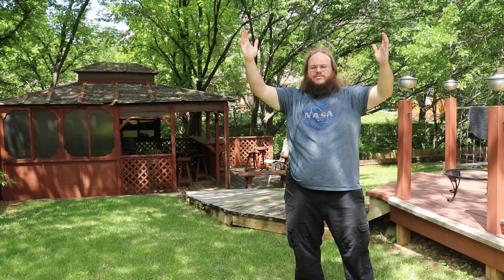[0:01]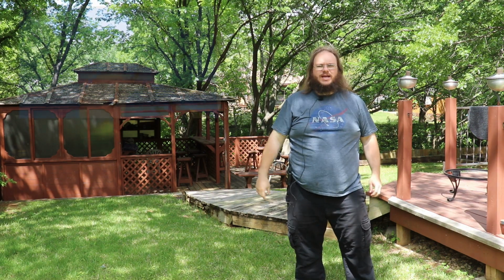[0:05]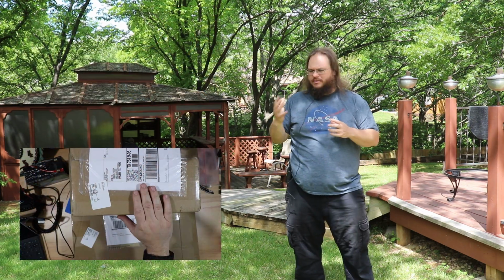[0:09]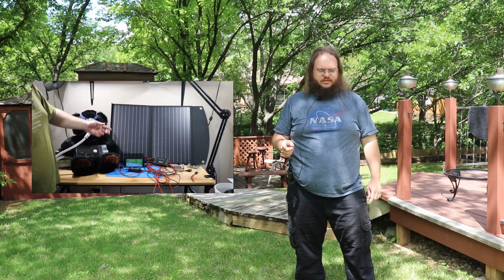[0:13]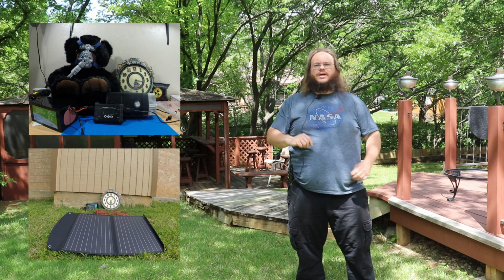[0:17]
KG5AHJ, and today I'm building and unboxing and putting together my solar charge battery system for the CPAP machine. Yes, I said that right. Along with testing and seeing how it performs. So, play that awesome intro video!
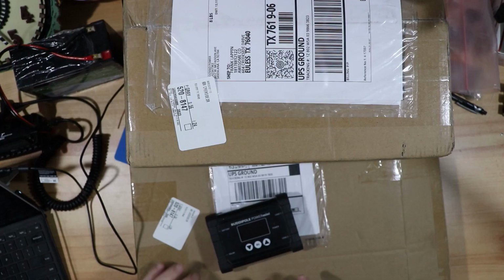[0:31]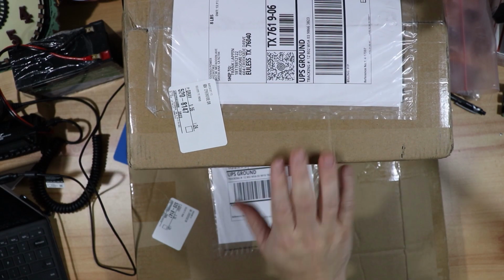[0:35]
Here I am back at the workbench and I got some new toys in here. Yay! I have a Bioenno battery and a solar panel. Let's go ahead and get them unpacked.
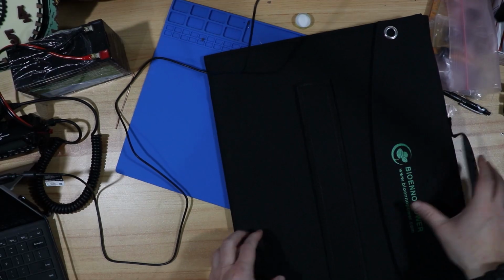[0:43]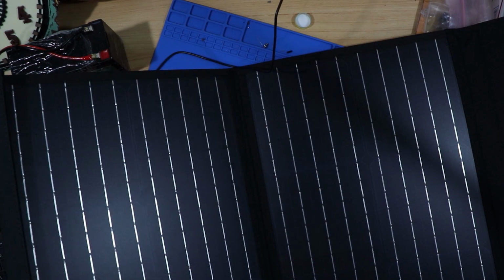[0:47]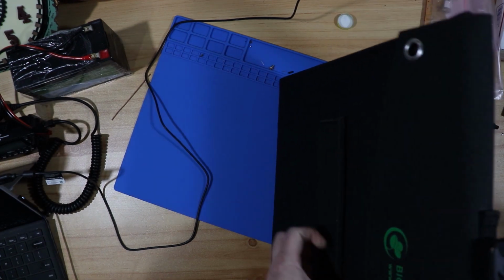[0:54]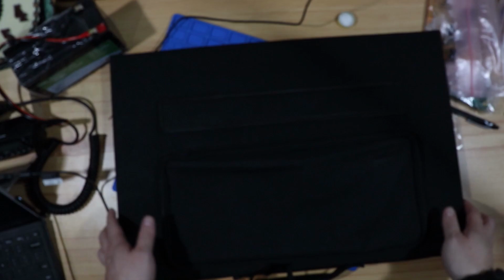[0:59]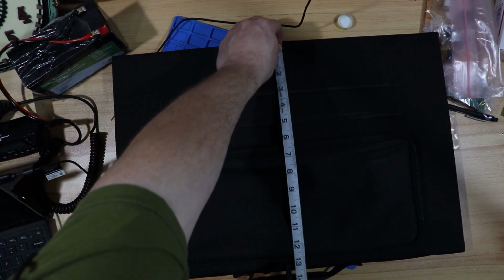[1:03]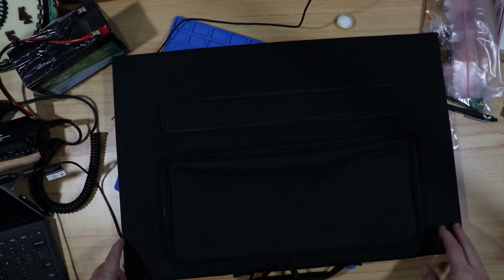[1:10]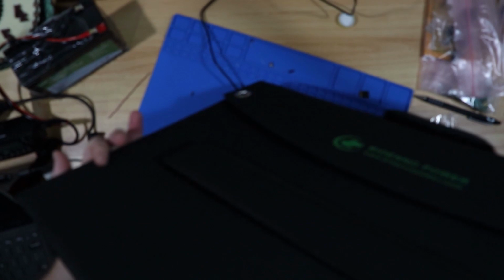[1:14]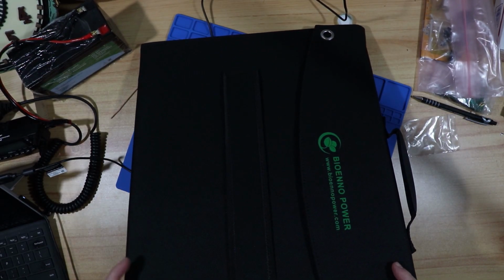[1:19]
So this is the 60 watt solar panel. Weighs about 5 pounds and it's foldable. And I was hoping it would be a little bit smaller. It comes in about 21 inches across by 14 inches long, just shy of 2 feet this way and a foot this way. I was hoping to take it backpacking. We'll see if I can find a backpack for it. It is 5 pounds, which is not too bad. I just wish it was a little bit more compact. I can't wait to get this out and see what it does.
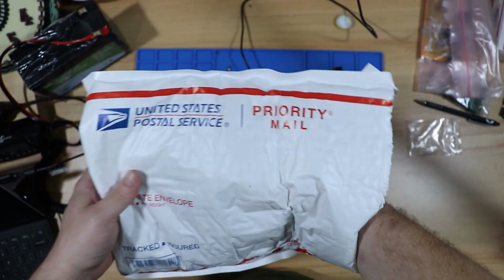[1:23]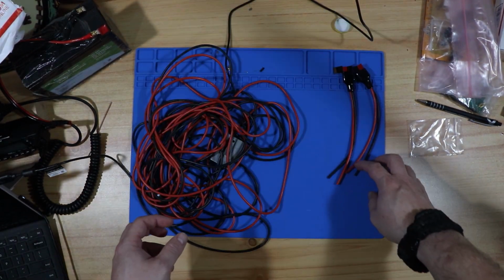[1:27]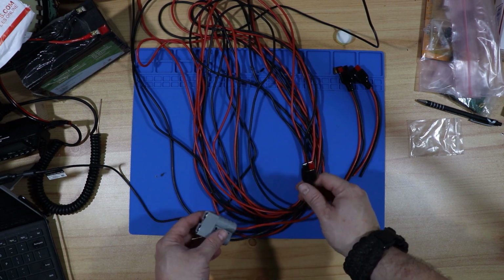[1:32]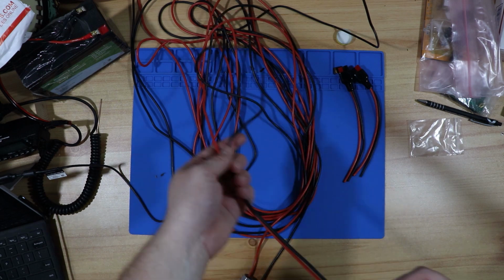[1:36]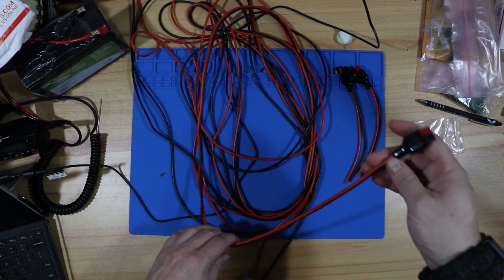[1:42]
We'll take this out next. This should be just some extension cords. Oh wow, extra cables? I love how flexible these cables are compared to other power cables. It's just a little bit unwieldy being loose like this with two cables. I added zip ties around it about every foot or so, and this is becoming one of my favorite cables.
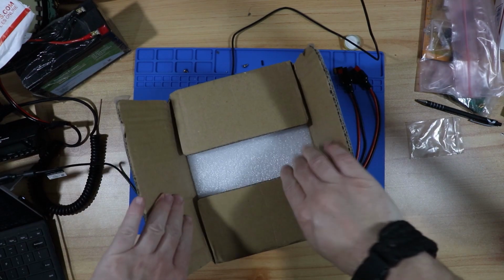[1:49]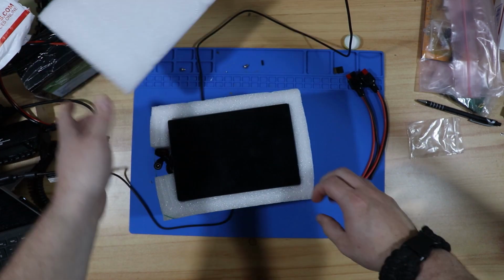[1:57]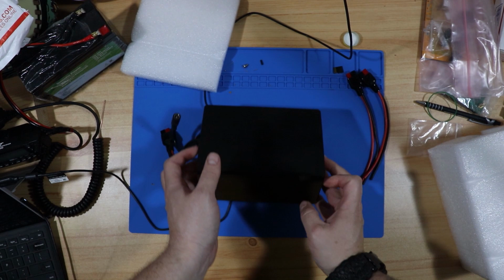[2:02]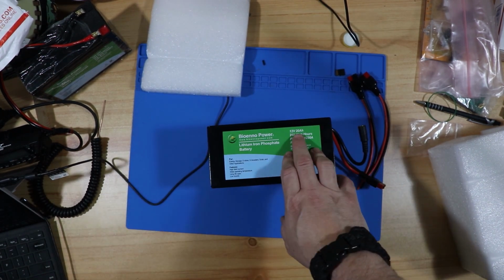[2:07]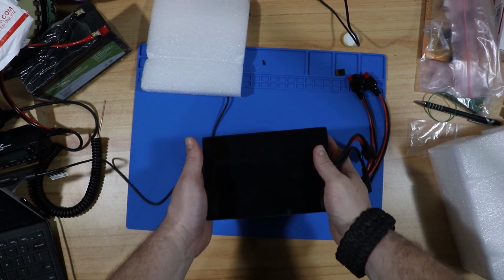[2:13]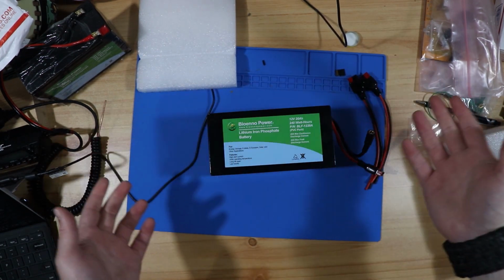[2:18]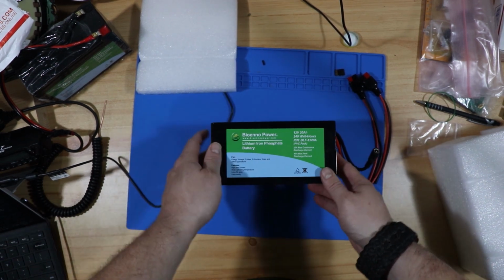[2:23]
All right, and the next and final thing. Da-da-da-da! The battery! Ooh, that was packed nicely. Heavy guy. This is a 20 amp hour 12 volt battery from Bioenno, and it's only about 5 pounds, and it's very nicely compact. A little heavy, but it's 20 amps. It's gonna be heavy. There's a lot of cells in there. Look at, man, this is nice. I like it, I like it.
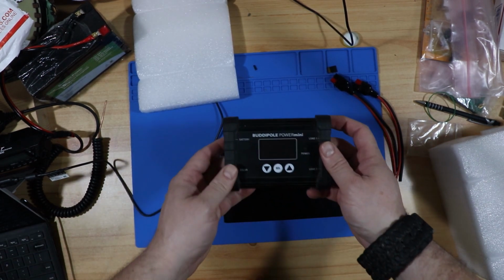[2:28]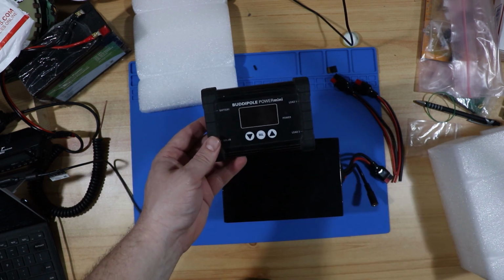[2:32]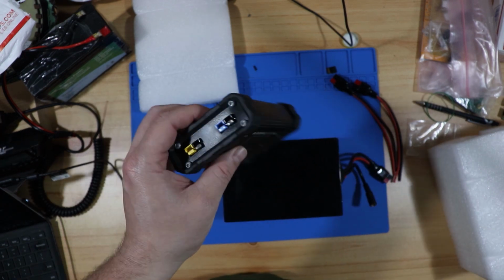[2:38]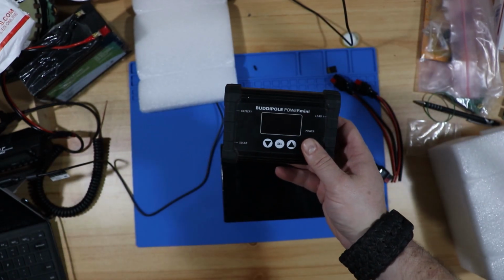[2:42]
Then the final piece to the ensemble is a Buddipole PowerMini. I got this courtesy of Jason. This is one of his older models. I played with it a little bit last night. It's very nice, compact, and I like how light it is. So this will be perfect to go backpacking with.
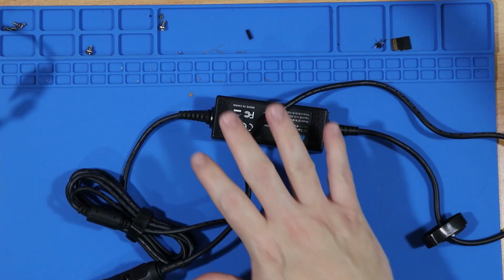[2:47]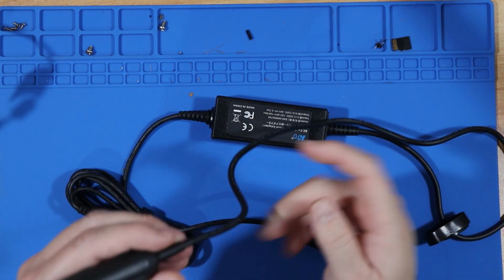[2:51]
All right, let's get some power poles on some cables. Now, since I have this 12 volt adapter for my CPAP machine, I want to cut this cord and put power poles on it. But I don't want to just get rid of this 12 volt adapter. I'm also going to put power poles on this end. So if I do need to use the old 12 volt adapter plug, I can plug it back in using the power poles and I'll still have the adapter.
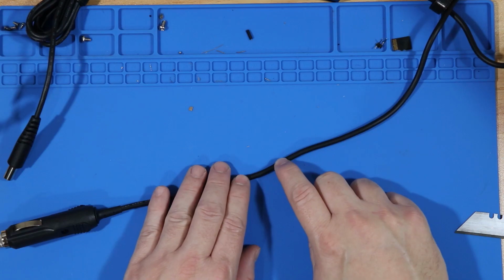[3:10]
Before I get started, I'm going to go ahead and cut into this line to see what kind of wiring we have, and also to put a voltmeter on there to see which wire is giving us the positive current. Sometimes these manufacturers use the same color of wires inside there, so this approach will show us which line is actually positive without relying on them.
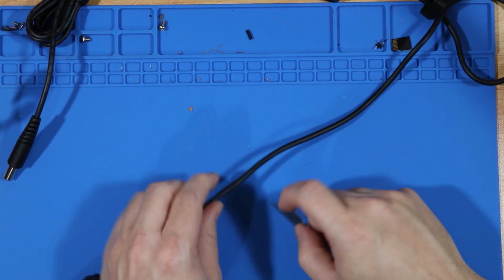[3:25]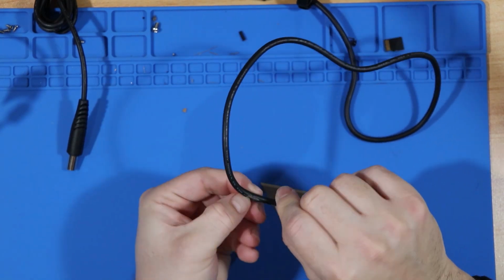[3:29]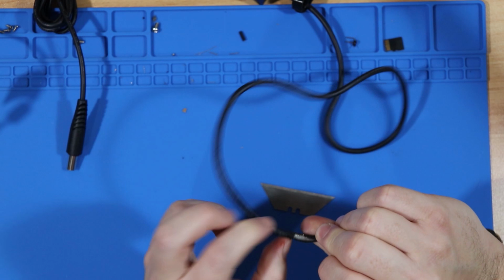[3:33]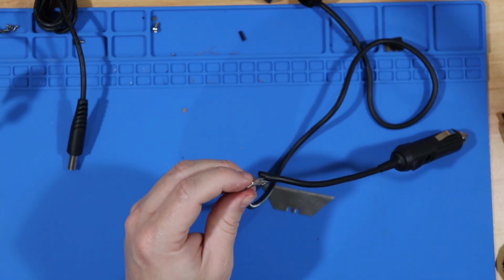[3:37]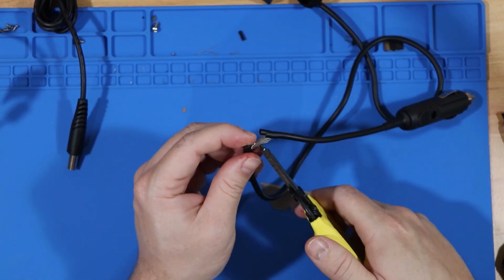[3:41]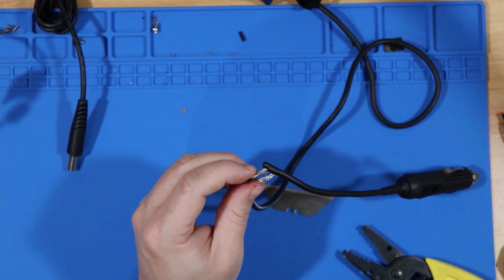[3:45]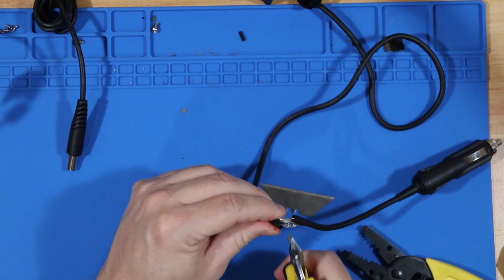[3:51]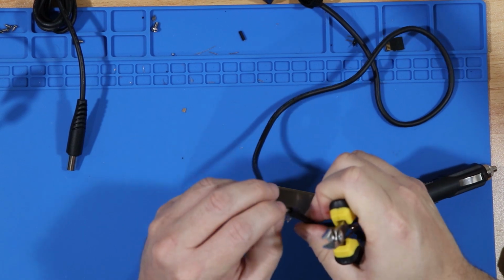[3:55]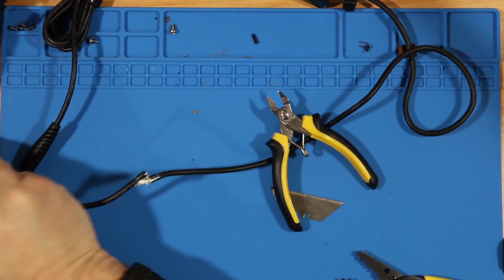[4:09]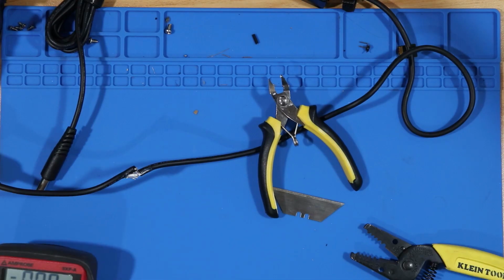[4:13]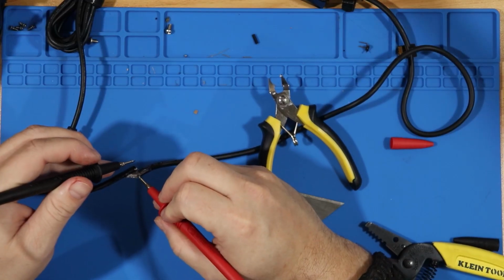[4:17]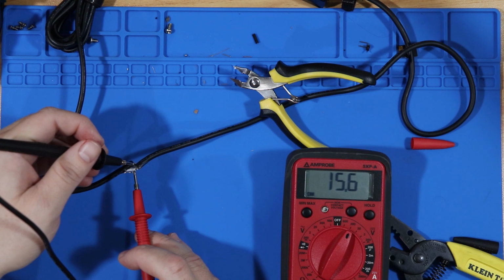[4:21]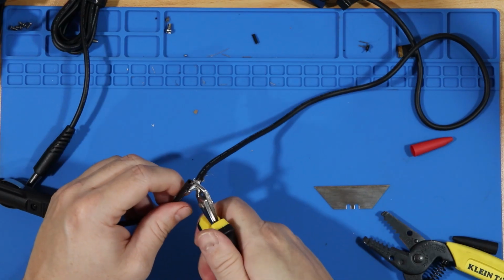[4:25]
Well, what is that? I think that's just shielding. Watch me mess this up. Now I'm just trying to expose the inner bundle of wires. Let's go ahead and plug it into a 12 volt port and see what is what. What I'm seeing here is the inside wire is our positive wire and the outside shielding is our ground. I think I can make this work. Well, no going back now.
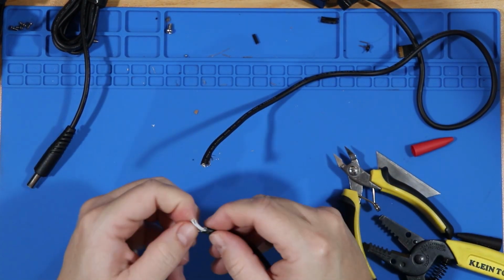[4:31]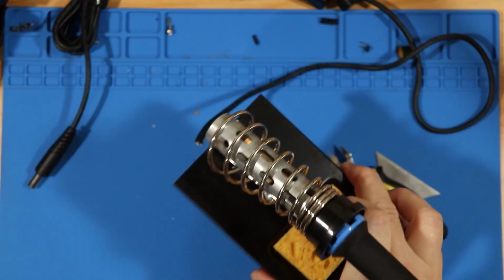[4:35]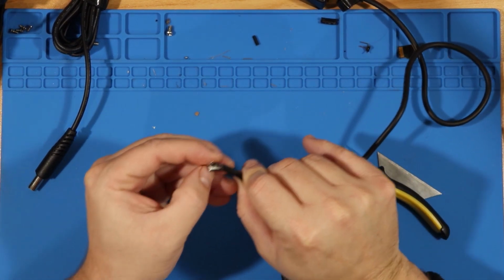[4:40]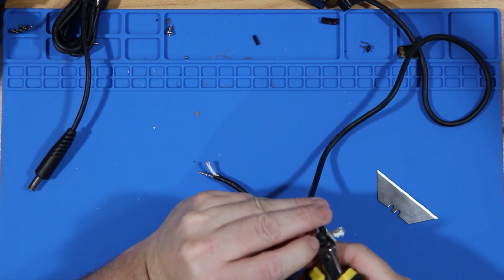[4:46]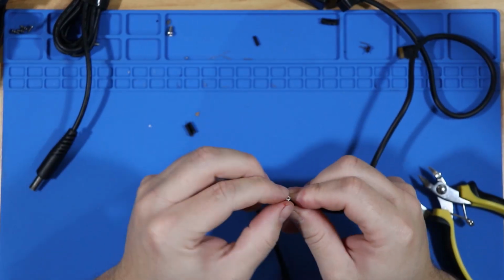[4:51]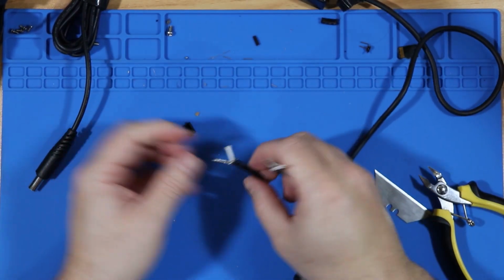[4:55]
Well, I got the soldering iron warming up here. Go ahead and prep this line, or this side also. I'm just peeling the jacket back here, cutting it off, and then taking all this ground wire, pulling it to one side, and twisting it together. And there's my ground. Same thing with this side. I'm going to leave them separate until I get the power pole connected, so they don't have a chance to touch or I accidentally pull the wrong wire over and have to sort it out.
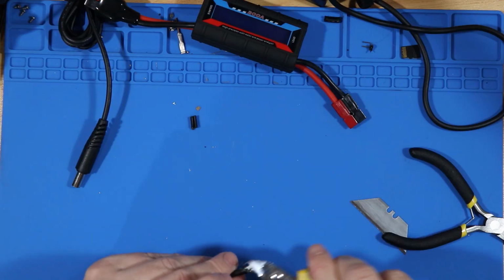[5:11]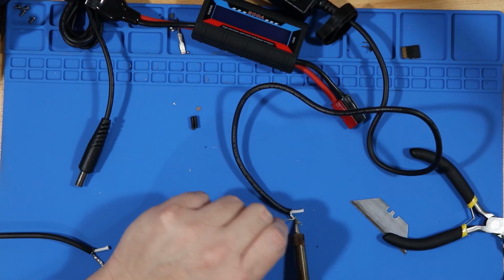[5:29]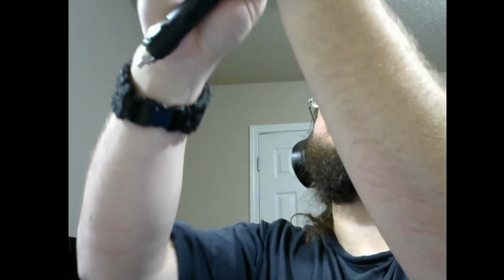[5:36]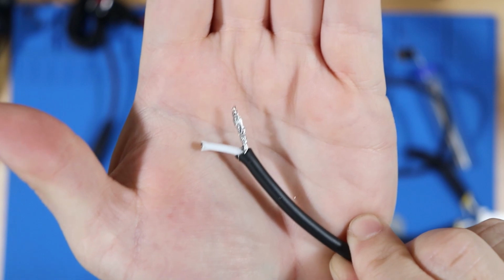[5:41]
All right, here comes the hard part. Let's kind of cut those stragglers. I'm going to tin these. Now that is one solid piece of wire, or it's going to act like a solid piece of wire.
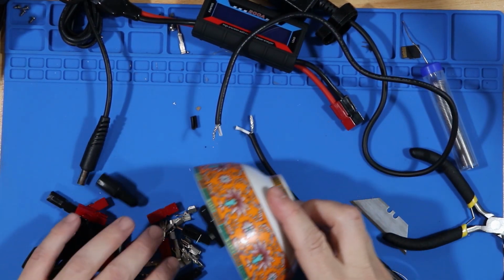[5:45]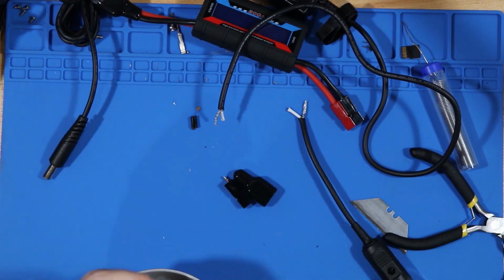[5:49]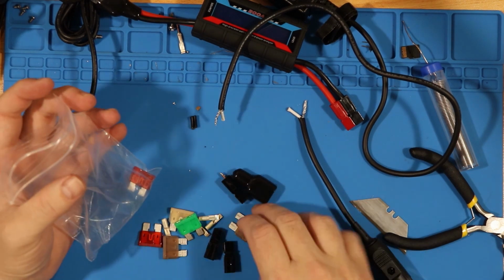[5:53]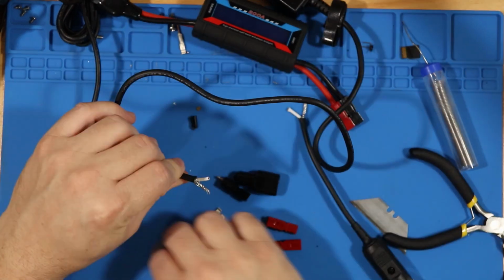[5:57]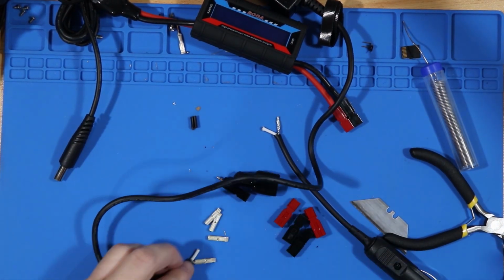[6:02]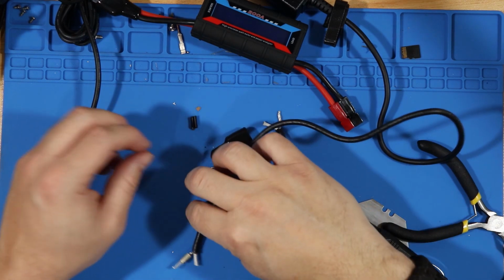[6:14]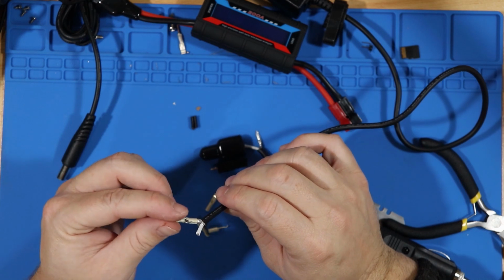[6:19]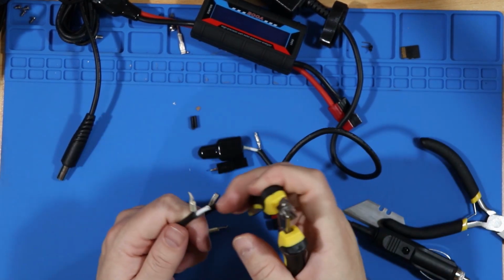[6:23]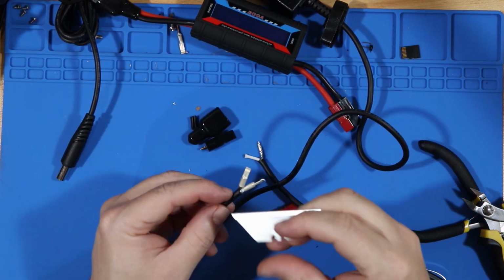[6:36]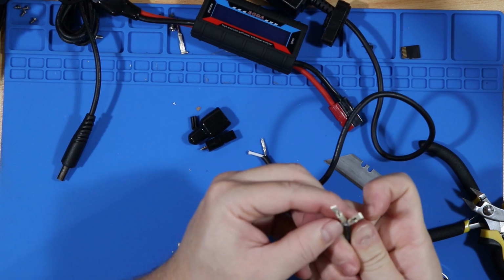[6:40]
I will call you the fuse bag. Hold it there. That was awkward. It's in there. Now, how to do this guy without shorting? Pull that back a little more. Always cut away from you, is that what they say?
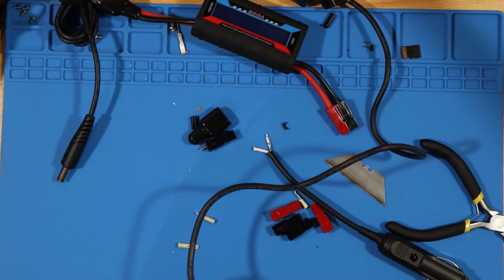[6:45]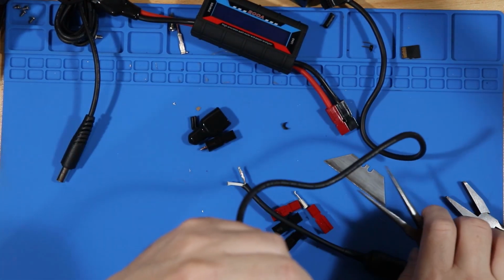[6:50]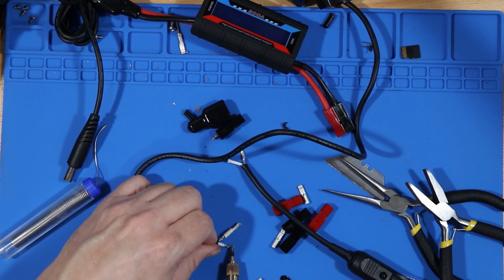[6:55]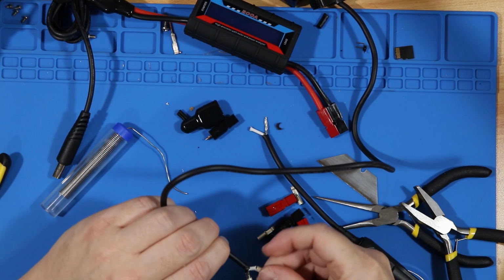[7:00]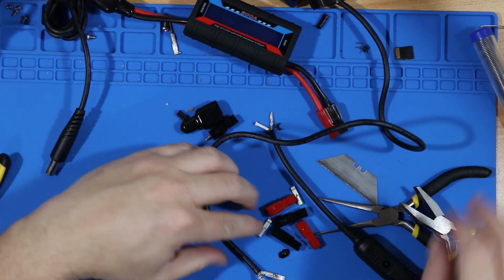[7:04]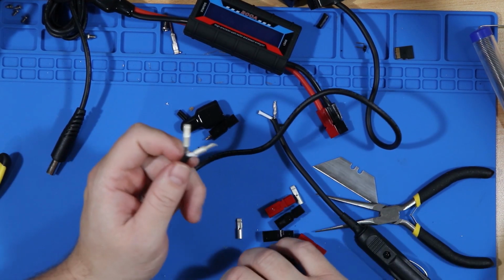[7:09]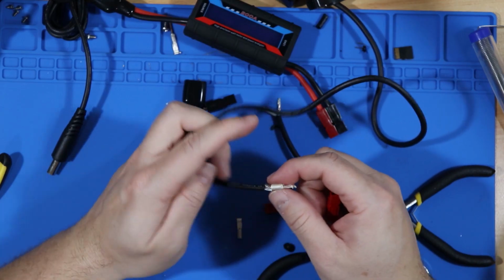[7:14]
Made a gigantic mess out of that. Let's mash those wires together. Maybe that got it? Looks like it. You know, I'm getting the hang of this. Except this part. I keep forgetting how to insert this.
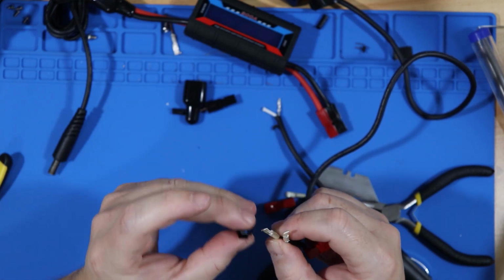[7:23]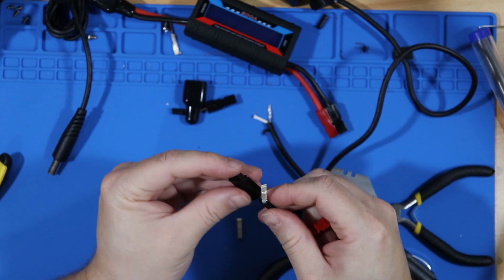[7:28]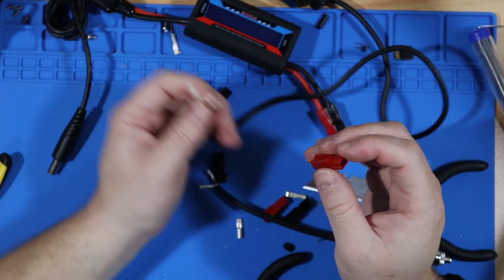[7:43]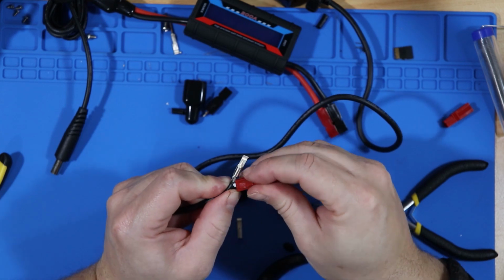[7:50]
That is upside down. It is right. But I think it needs to go the other way. Alright, forget that for now. Let's go to red. Sometime later. Come on! Hey!
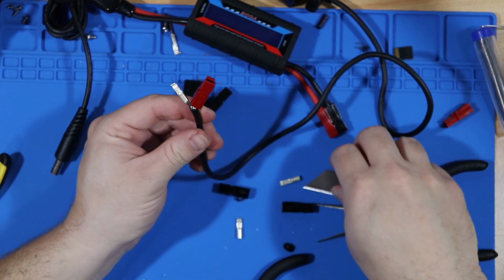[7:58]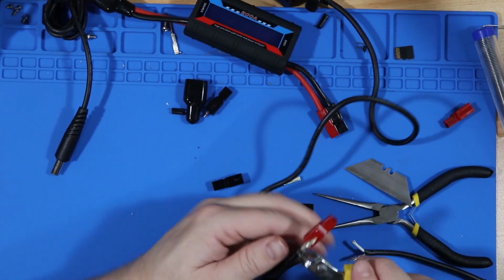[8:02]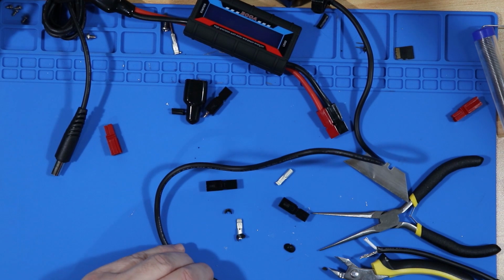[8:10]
Crap. I need more wire. Let go now. Crap, too much. Now I'm just going to solder the new exposed wire to just keep it all together.
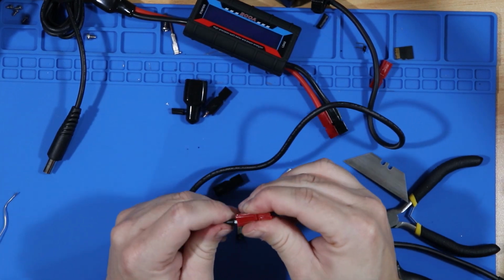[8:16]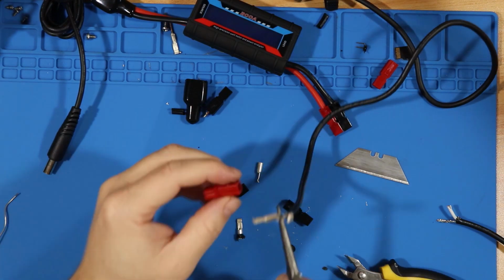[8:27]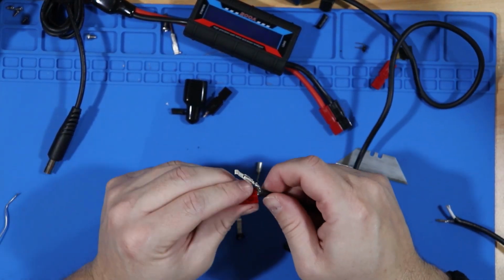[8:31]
As you can tell here, I haven't quite mastered putting these pins in the end caps yet. I know this is not the usual thing I do. I do want to show my failures, but for time wise, and since it's my channel, creative editing to show success and move on.
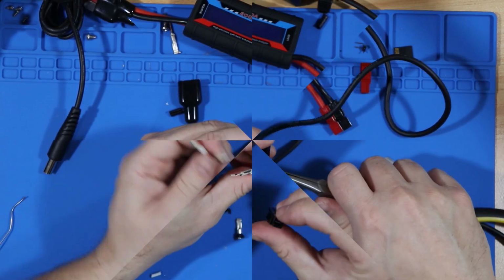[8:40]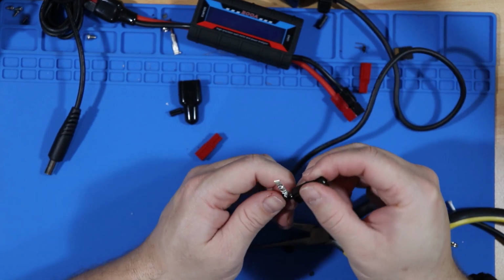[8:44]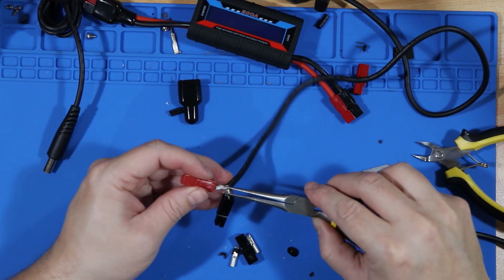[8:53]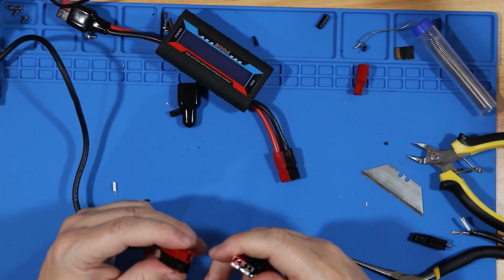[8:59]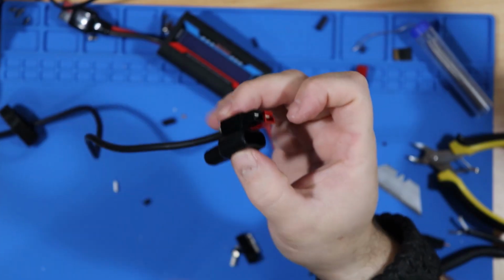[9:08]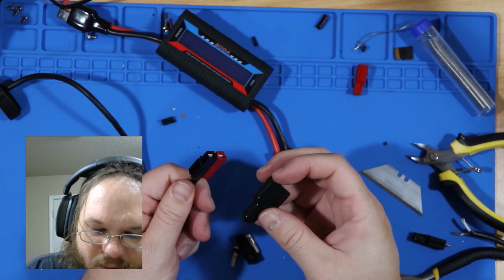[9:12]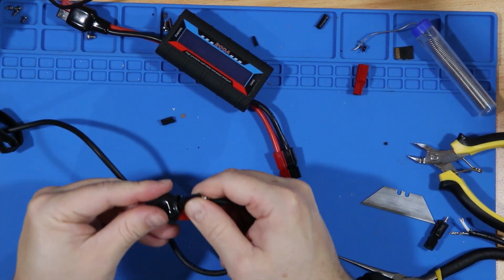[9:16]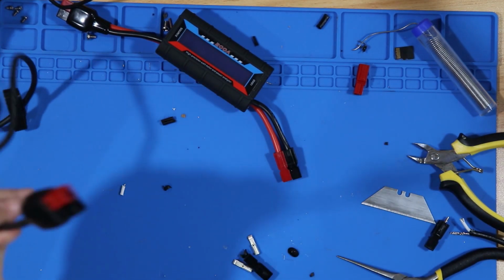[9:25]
Hey, finally got one. Oops, that needs to be on the other side though. I did a thing. I think I have electrical tape somewhere. I'll tape that up. But yay, that's one side.
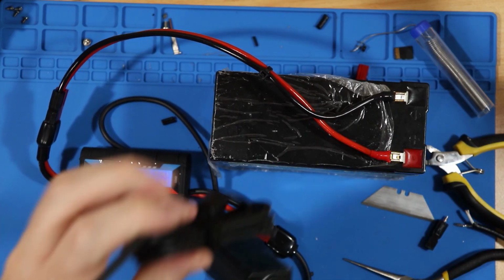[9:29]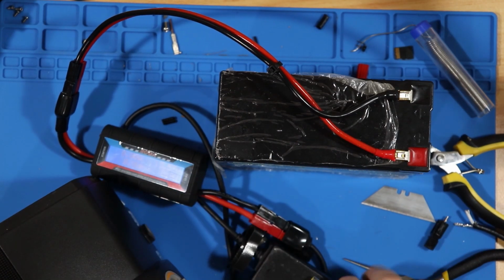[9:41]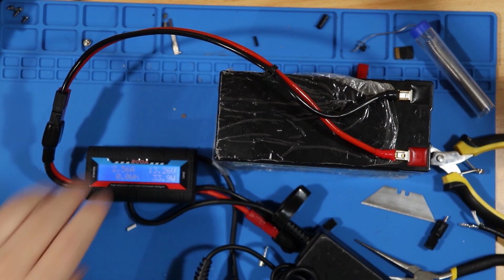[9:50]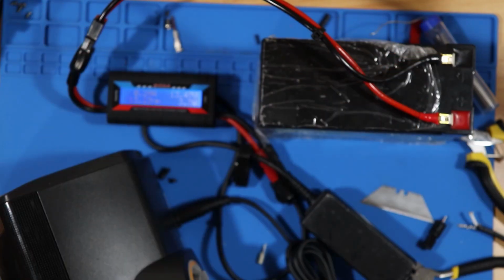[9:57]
Before we hook up the big expensive machine to my soldering job here, I'm gonna see if I can get a read on the volts. It's constant, not fluctuating. Let's see if it turns on. ResMed, woot! I did a thing right. Woot! I still need to solder this.
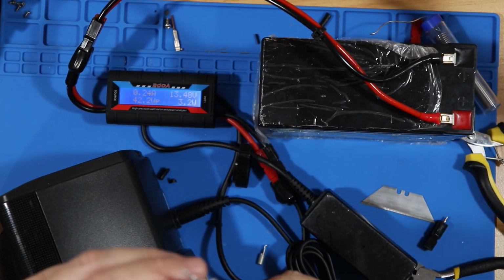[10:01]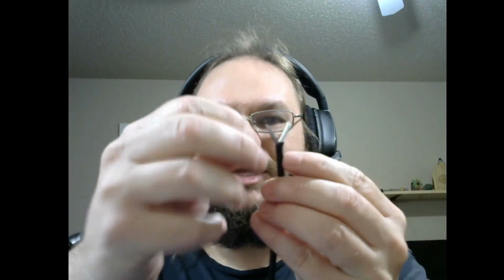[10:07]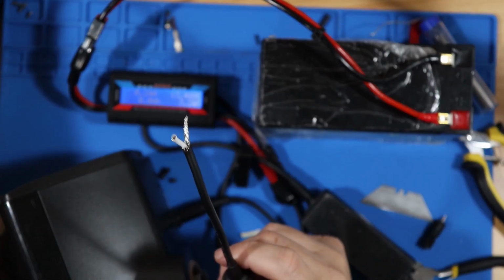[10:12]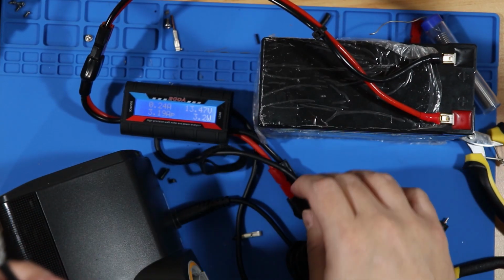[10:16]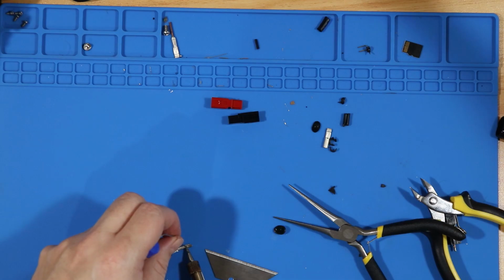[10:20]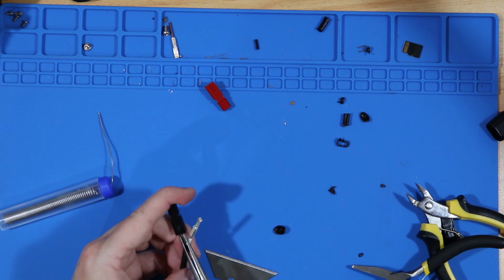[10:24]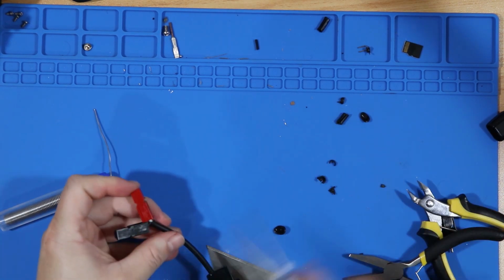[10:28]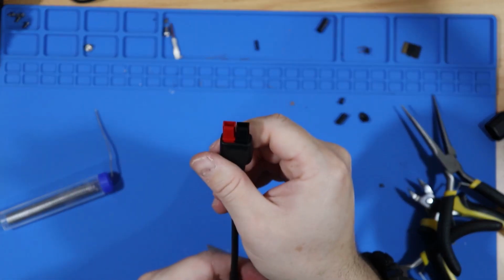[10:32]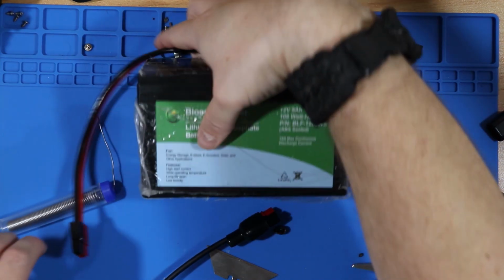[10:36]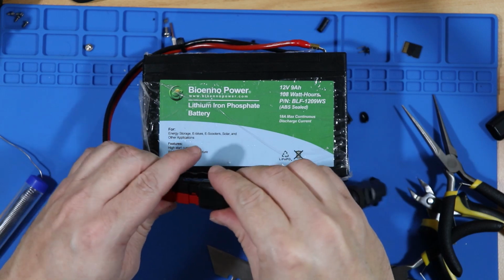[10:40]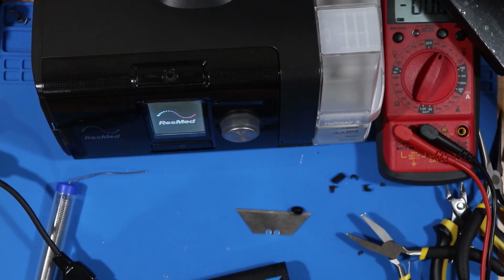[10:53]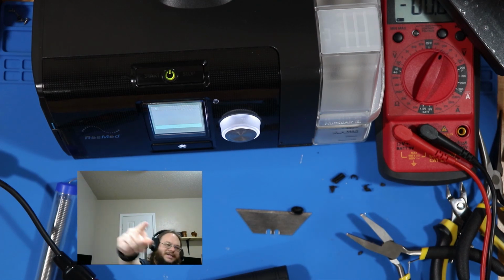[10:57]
So what I've learned is I need a little bit more of the shielding peeled away. And I'm still having trouble putting these on correctly onto the plastic. Also to note, put these on first. I'm gonna have to use duct tape for one of my connections. All right, let's pull out the battery. Look at that. No fluctuating, no surges. Success.
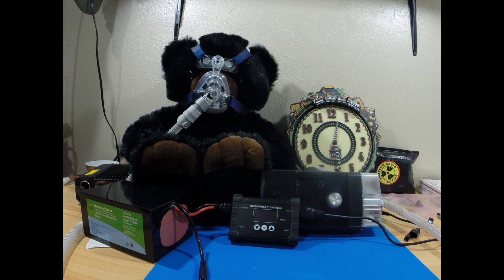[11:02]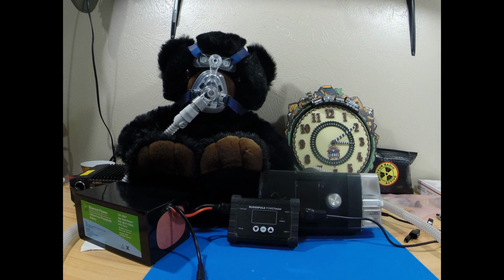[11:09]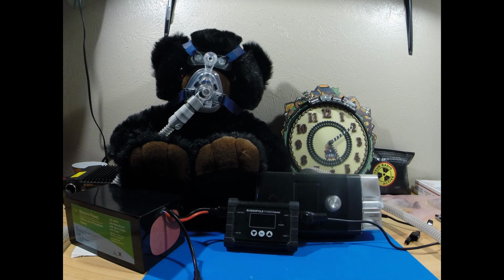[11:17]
So here is the test rig for the battery. I have the 20 amp hour 12 volt battery plugged into the Buddipole Power Mini. Then that's going to the CPAP machine. Then the CPAP machine is providing positive air pressure to Tank General Paddington Bear. The test here is to see how long the Bioenno battery will last, and also to prove the estimates I did in my previous video. Link is above! Unfortunately, the Buddipole screen turns off after a set period of time, and I cannot figure out a way to undo that.
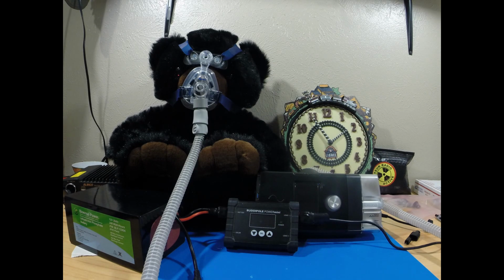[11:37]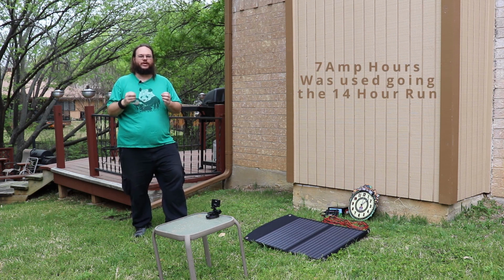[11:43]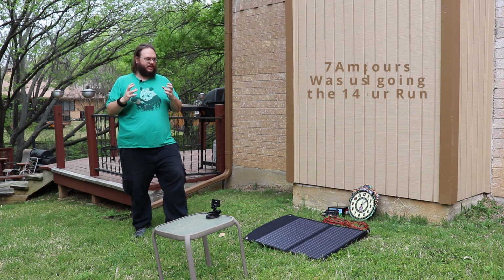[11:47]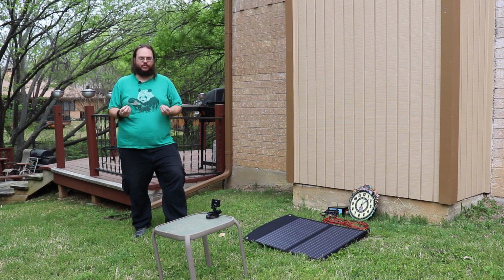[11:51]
So yesterday was the battery drain test. This test ran for 14 hours on my test bench upstairs, and it didn't drain the battery. To be honest, I was pulling less amperage out of it than I expected. The amp meter I was using to give me the value of how many amps it draws wasn't really calibrated correctly, and I way overestimated on the capacity I needed for my system.
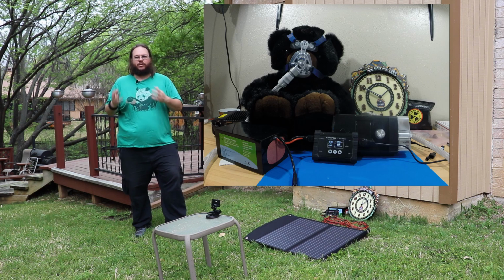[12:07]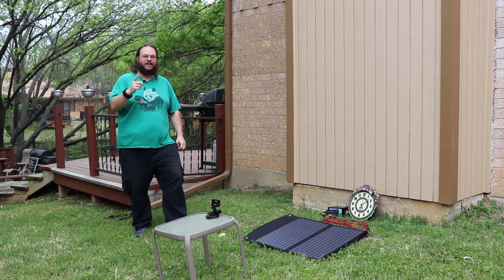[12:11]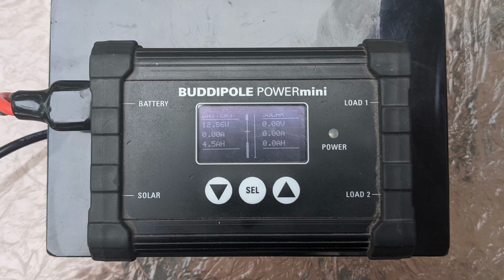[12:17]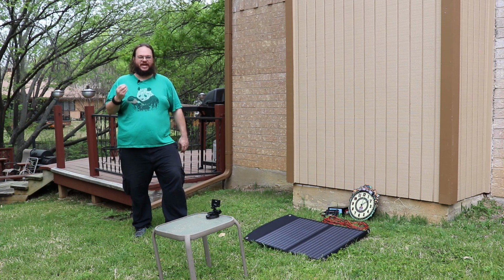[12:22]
That being said, after the 14 hour run, I still took my 20 amp hour battery downstairs, and I had a full night of 8 hours of sleep. When I looked at the Power Mini in the morning to tell me how many amp hours I used overnight, it was only 4.5. So I used on average half a watt, compared to when I was calculating everything, it was 1.5. So I have three times the capacity as I initially wanted. That's not a bad thing.
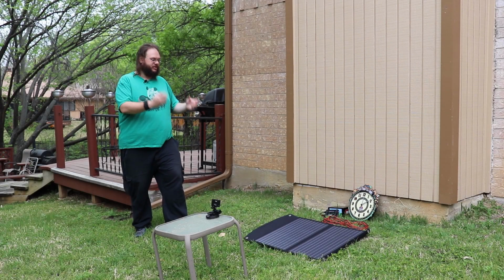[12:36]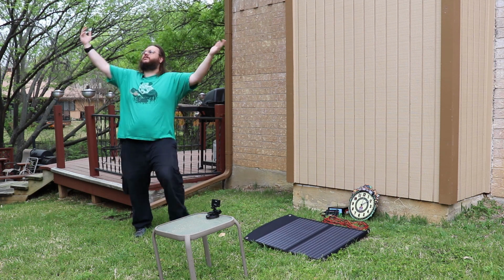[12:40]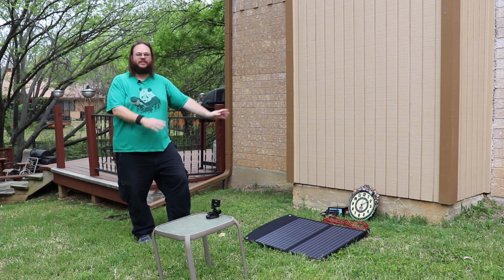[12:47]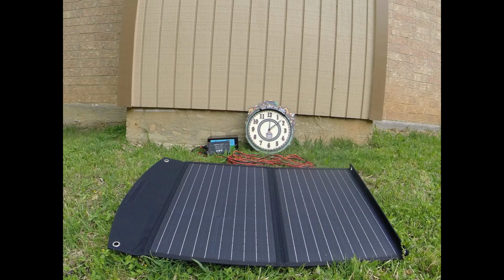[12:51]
Today is the recharge test. I want to know how long it's going to take to recharge my battery with the 60 watt panel plugged into it on this beautiful, fine, overcast day. But what are you going to do? So I'm going to leave it out. I turned off the sprinkler, so we'll see how long it takes to recharge.
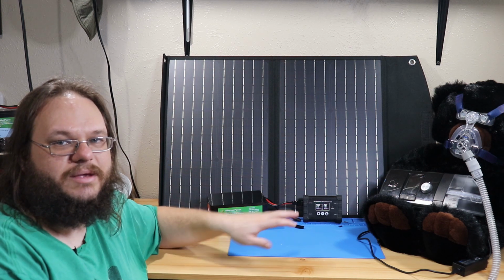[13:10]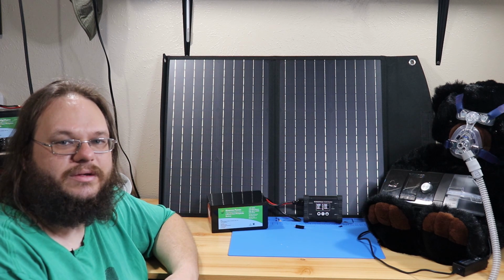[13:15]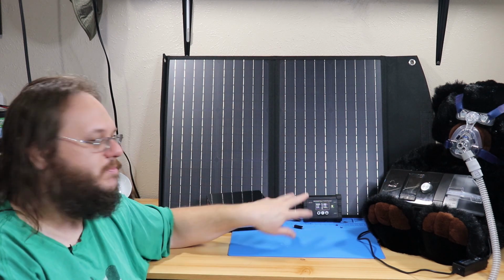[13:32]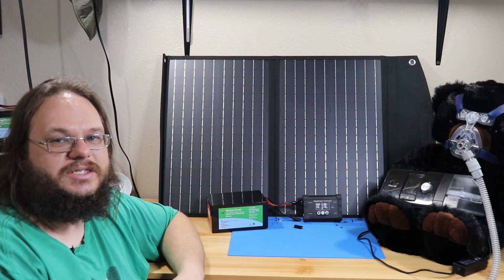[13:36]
So today I set up the battery with the solar charge panel here, a 60 watt solar charge panel, outside for a good 8 hours. It was overcast the entire day. I couldn't do anything about that. But I got 3.7 amp hours charged into the battery. 3.5 amp hours would get me most of the night on an overcast day. So on a day that I did have solid sunlight, this battery could have been recharged. Overall, I am very impressed with the system.
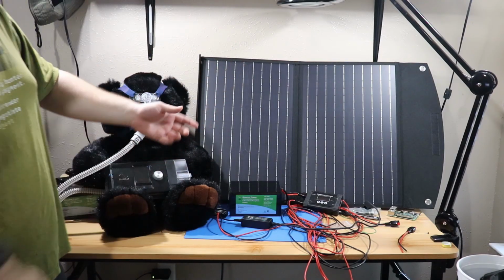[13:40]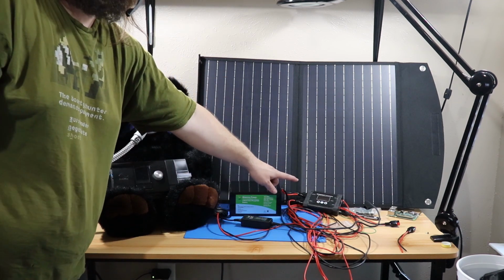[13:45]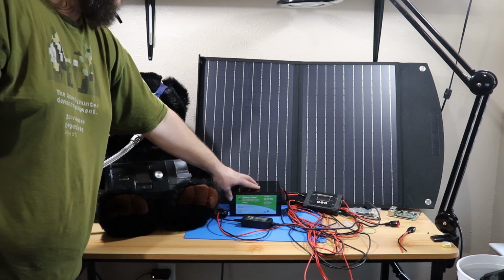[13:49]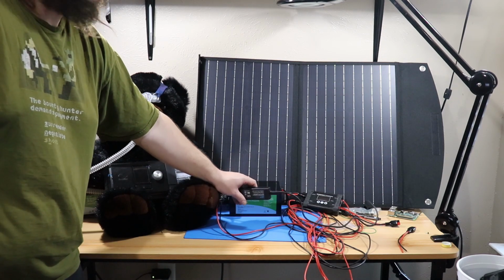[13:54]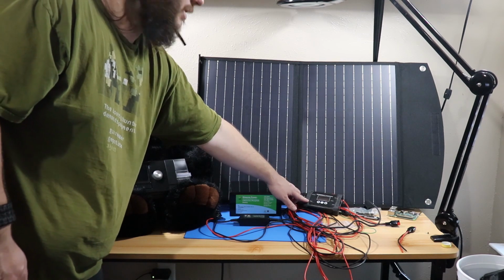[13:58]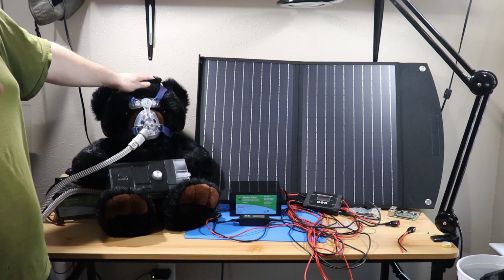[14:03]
So here's the system all laid out. Yay! Starting with the solar charger. Solar charge is going to the charge controller. The charge controller is going to the Bioenno battery. Then also my CPAP machine is powered by this 12 volt adapter. That's going to the Bioenno also to power it. And so Commander Paddington Bear can have power and sleep at night.